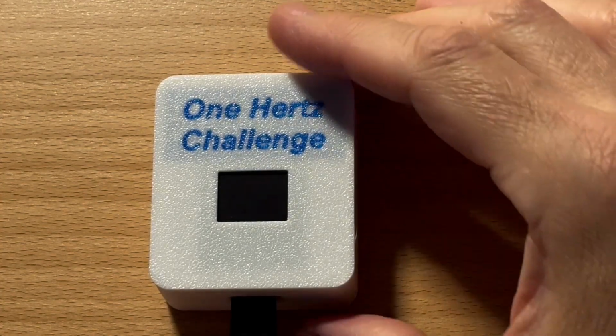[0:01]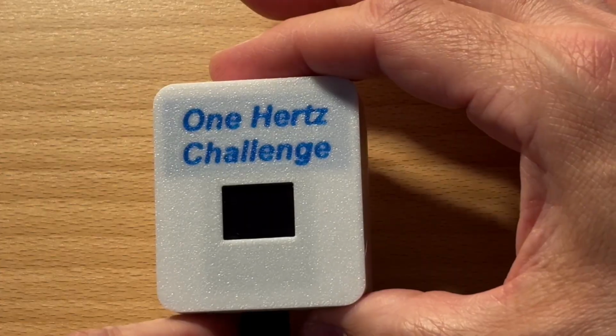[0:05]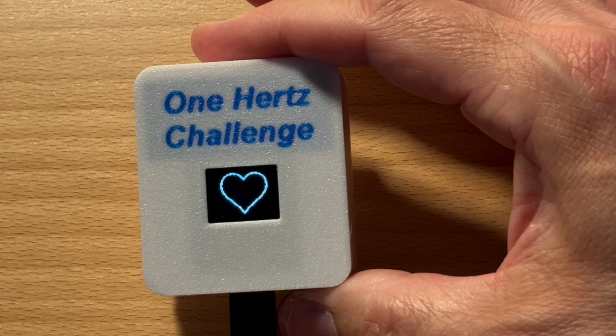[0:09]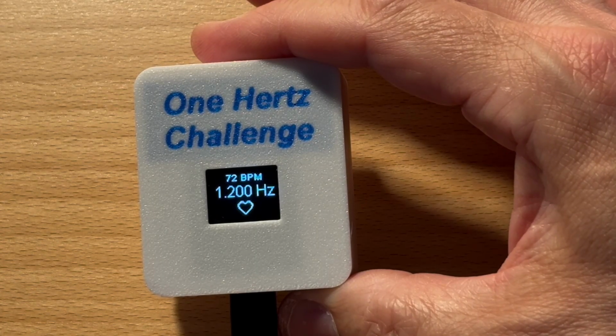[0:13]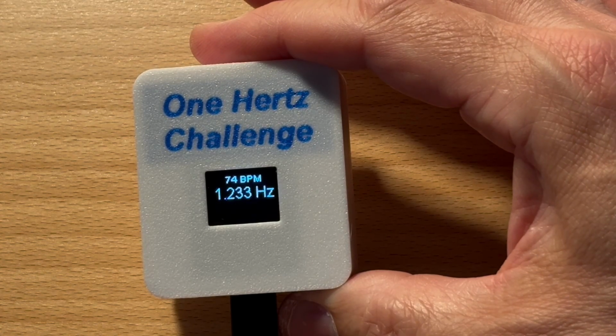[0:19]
This is a fully functional heart rate monitor, and the best part, you can build it yourself. It is built around an Arduino ESP8266 microcontroller and uses inexpensive, widely available components. It fits into a compact 3D printed case and displays your pulse in real time.
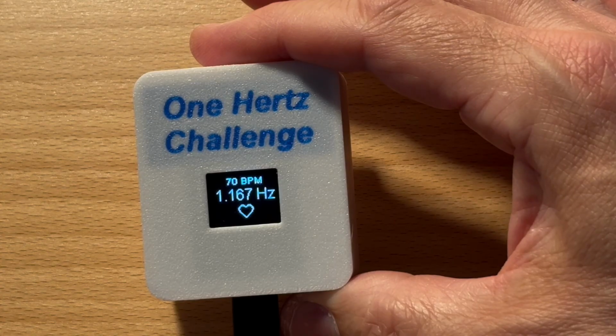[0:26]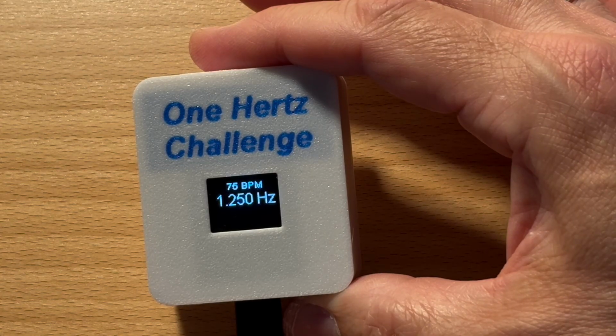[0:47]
The build is straightforward. All you need is a bit of soldering experience and access to a 3D printer. Everything is open source, and the result is a small, self-contained device, not just a breadboard setup. Whether you are a beginner looking for a hands-on project or a maker wanting something practical and polished, this one is for you.
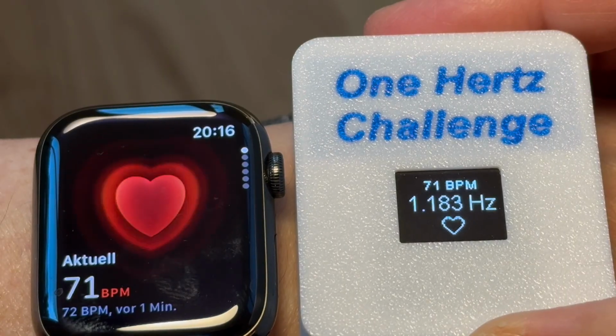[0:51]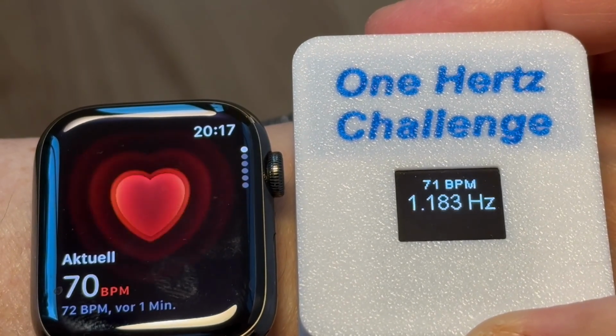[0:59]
Here is a short side-by-side comparison between my do-it-yourself heart rate monitor and my Apple Watch. As you can see, the readings are almost identical, a clear indication that the do-it-yourself device is measuring correctly.
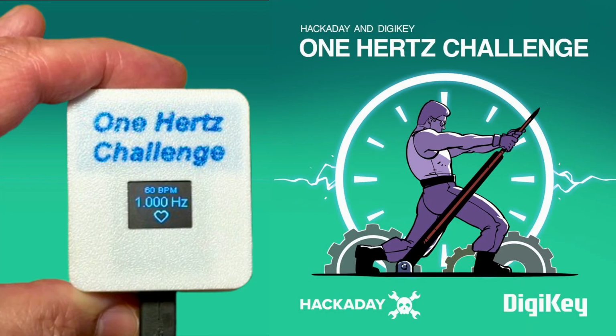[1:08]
This project was developed as a contribution to the One Hertz Challenge, a design contest hosted by Hackaday and DigiKey. The idea? Build something that operates at 1 Hertz. So I thought, why not measure something that naturally runs at about 1 Hertz, the human heartbeat? This heart rate monitor does exactly that. It senses your pulse, calculates the frequency, and displays it in Hertz.
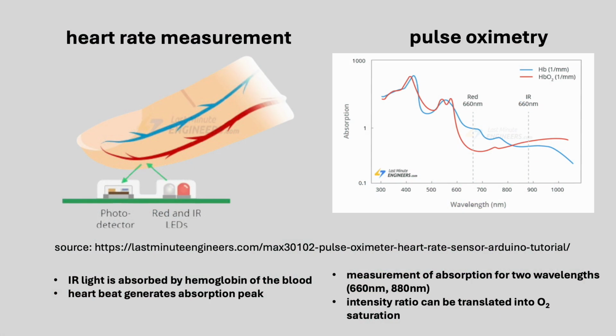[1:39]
This device uses an optical sensor that emits infrared light and detects how much of it is absorbed by the blood in your fingertip. With every heartbeat, the absorption changes slightly. This is what the sensor picks up. These variations are used to detect individual pulses and calculate the heart rate. Although the sensor is capable of measuring blood oxygen levels as well, that feature is not yet implemented in this version of the software.
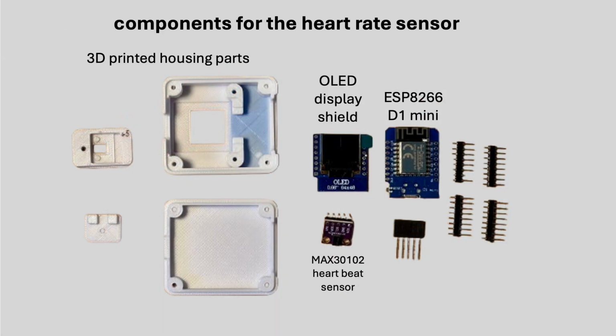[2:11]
This is all you need to build the device: a D1 Mini 8266 microcontroller, a little OLED display which fits the pinout of the microcontroller, and the MAX30102 heart rate sensor. The parts are inexpensive, widely available, and require only minimal soldering. Apart from that, you'll need the 3D printed case to bring everything together in a compact unit.
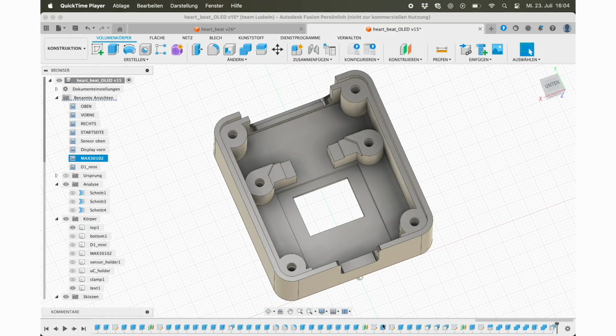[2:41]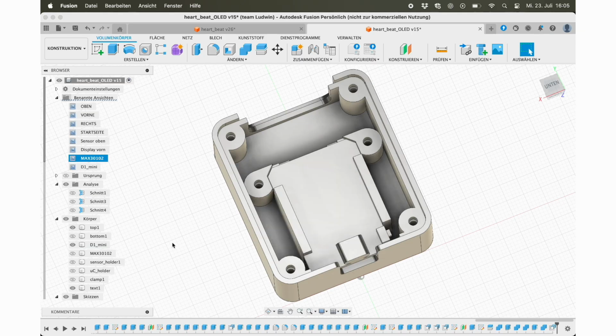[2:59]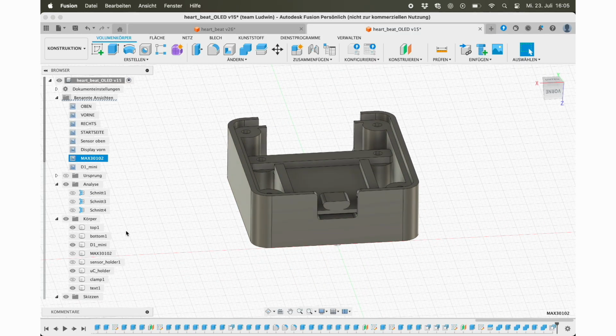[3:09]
This 3D animation shows a full CAD model created in Fusion 360. The first part shown is the upper shell of the enclosure. It acts as the structural backbone. All other components are attached to it. The microcontroller module with the OLED display already soldered on fits precisely into this frame and is secured using a small crossbar. A heart rate sensor is mounted on the top side of the case, held in a dedicated bracket and clamped firmly in place.
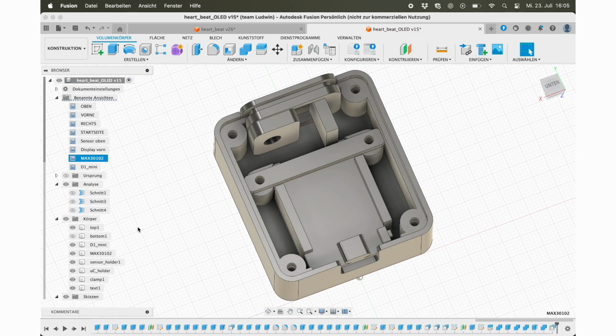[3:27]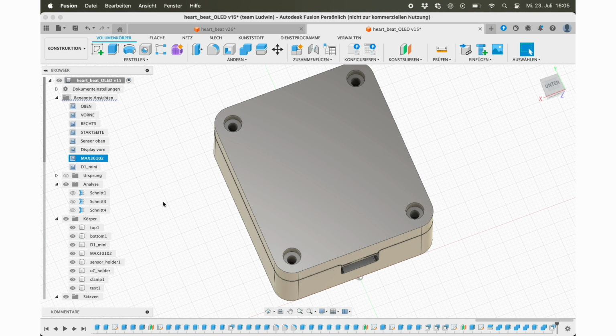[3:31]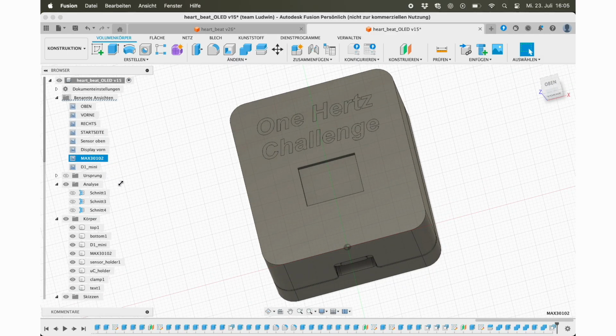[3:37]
Finally, the lower half of the enclosure seals the assembly. The complete Fusion 360 model is available in the GitHub repository alongside STL files for all printable parts, so you can customize, modify, and print everything as needed.
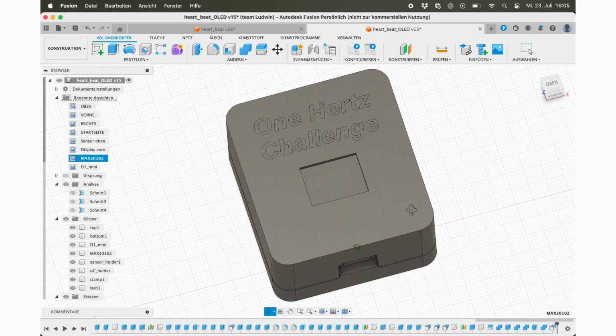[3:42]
To keep the build as compact as possible, I didn't use the typical stackable headers often seen in Arduino projects. Instead, I connected the D1 Mini and the OLED display using two simple pin headers. To achieve the compact spacing, I added two plastic spacers to each pin. These spacers are taken from a regular pin header strip and stacked as shown here. It's a simple trick and it makes the assembly much flatter.
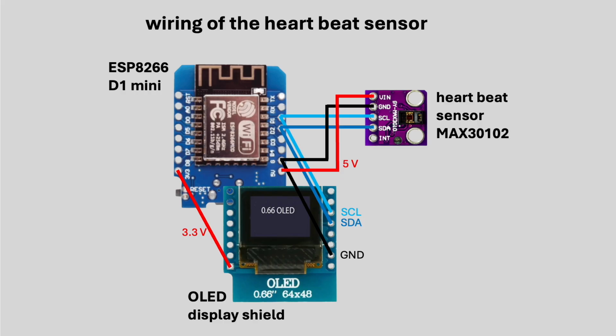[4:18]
The wiring of the device is straightforward. Although all pins between the D1 Mini and the display are connected, only 4 are actually used: ground, 3.3 volts, and the I2C lines SDA and SCL. The heart rate sensor is also connected to the I2C bus, but it's powered with 5 volts. The entire system is powered via the USB port of the D1 Mini.
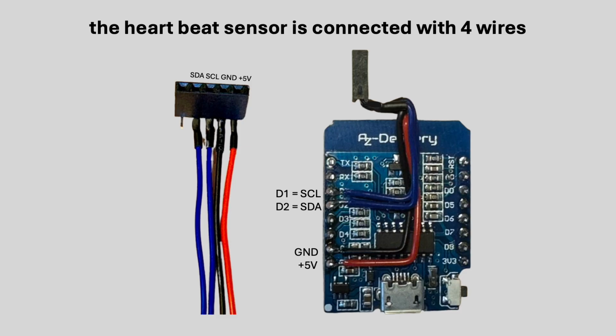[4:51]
To connect the MAX30102 sensor module, I soldered a 4-wire connector to the back of the D1 Mini. This provides access to power and the I2C signals while keeping the front side free for the display. It's a simple and compact solution that helps keep the wiring tidy.
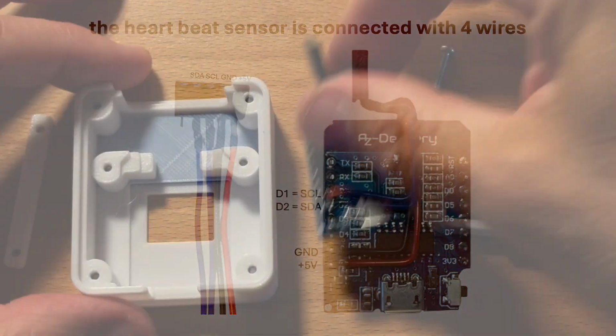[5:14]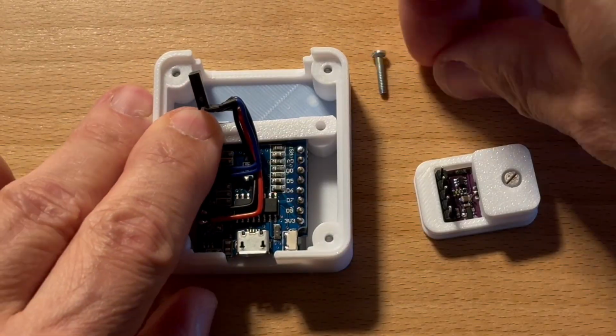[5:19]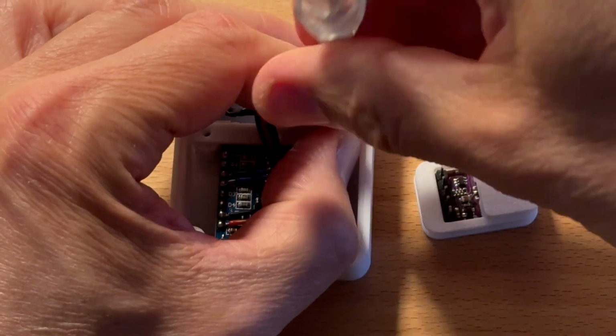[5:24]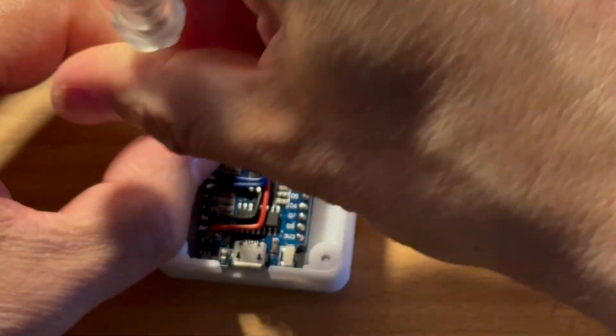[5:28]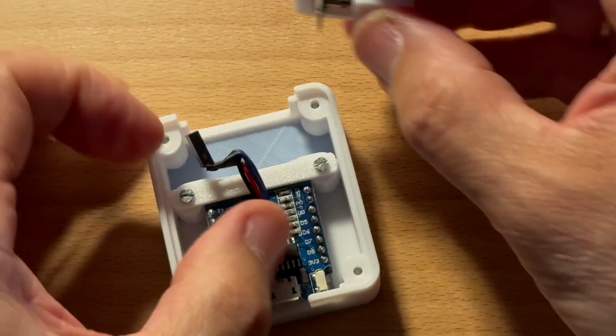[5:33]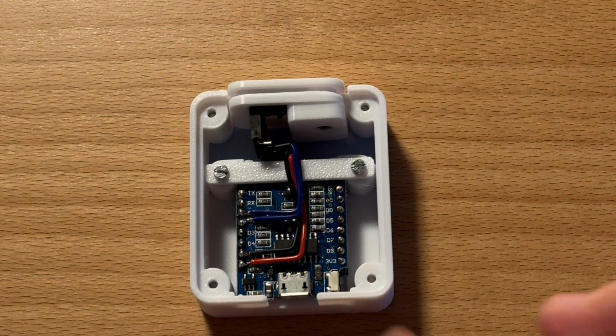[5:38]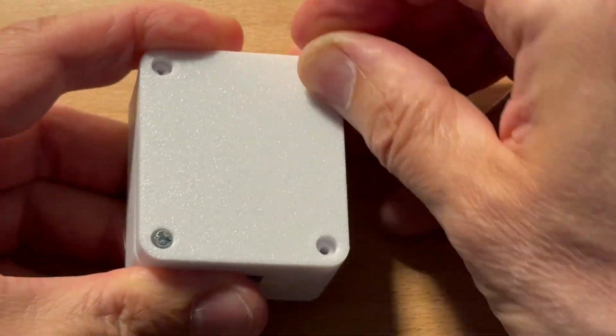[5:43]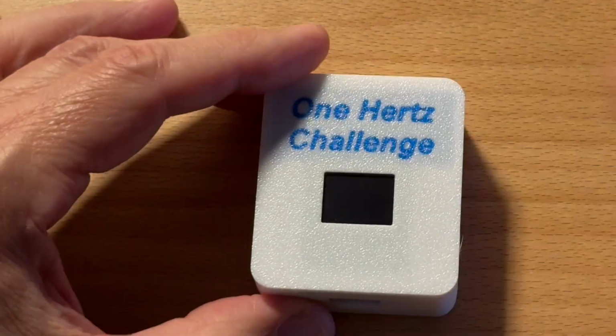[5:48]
Here you can see how the different components are assembled into the case. The D1 Mini with a display is screwed into the top frame using a holder bar. The sensor is inserted into its holder and connected to the microcontroller. Finally, the case is closed with the bottom shell. The result is a clean, compact, and robust build ready to use.
The heart of this project is its software, written in clean and modular C++. Whether you prefer the classic Arduino IDE or the more advanced Visual Studio Code with PlatformIO, both are fully supported. The code is structured using two simple object-oriented classes, making it easy to understand and modify. This ensures that beginners can get started quickly, while experienced makers can easily extend and customize the software to their needs.
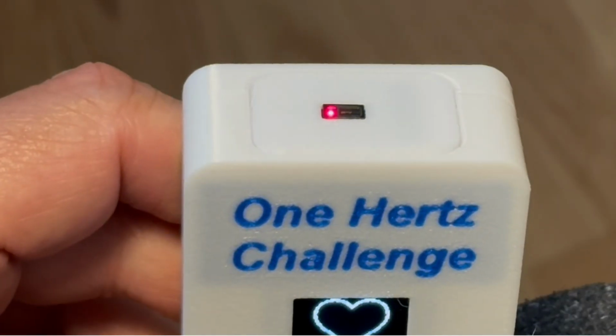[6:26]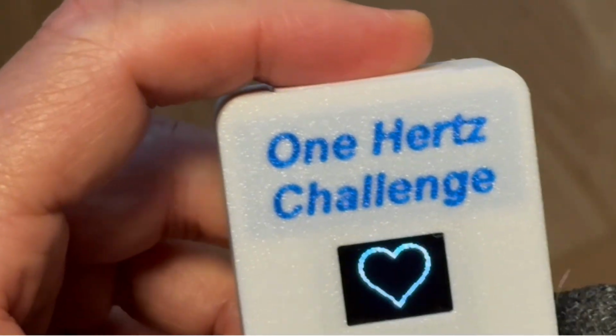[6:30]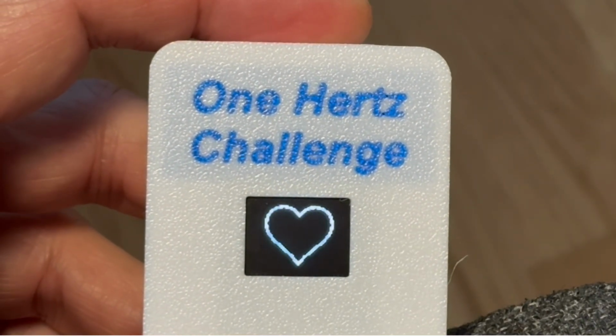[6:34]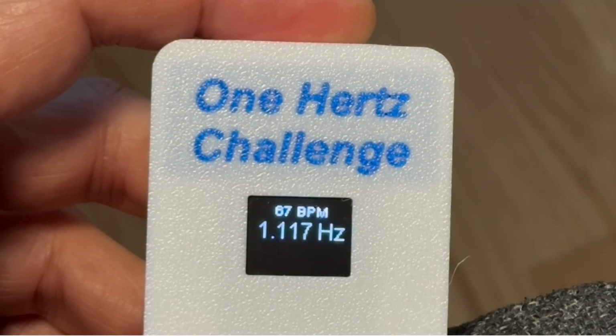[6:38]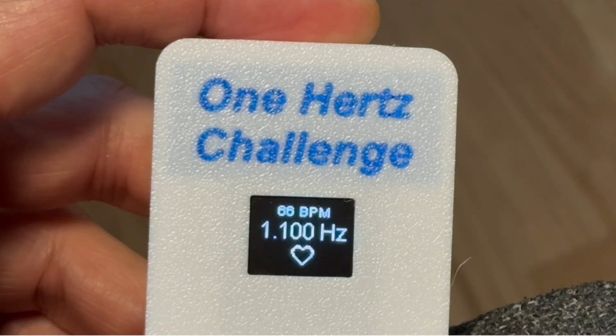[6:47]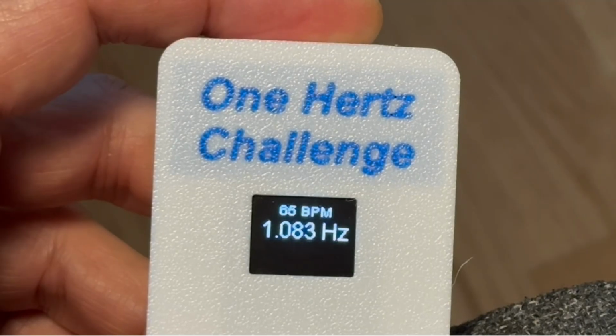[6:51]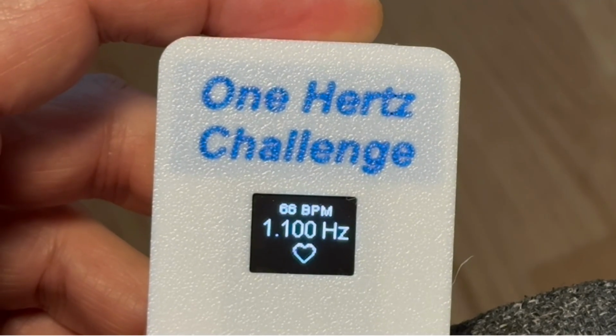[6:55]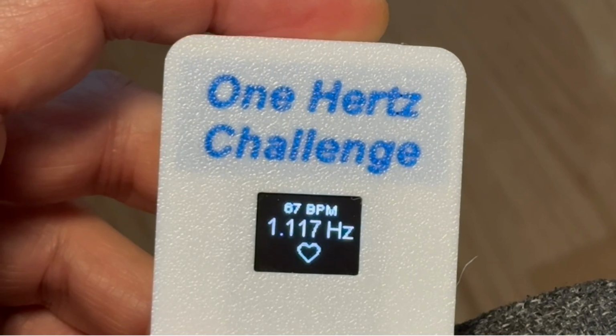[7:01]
As you can see, the sensor works reliably and responds clearly to each heartbeat. The frequency is displayed in hertz, typically close to 1 hertz, which corresponds to a heart rate of around 60 beats per minute. This simple and compact do-it-yourself device demonstrates that building your own functional electronics doesn't have to be complicated. All parts are inexpensive and easy to obtain, and the full documentation, software, and 3D files are freely available. If you are looking for a rewarding weekend project, this might be just the one.